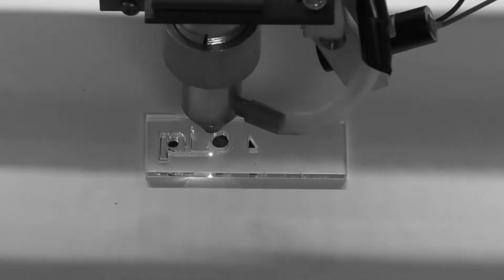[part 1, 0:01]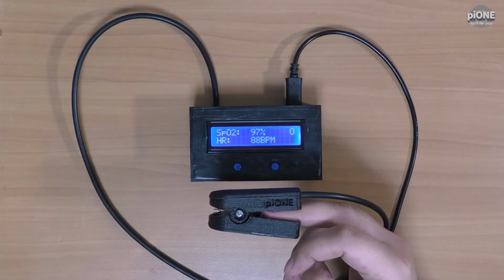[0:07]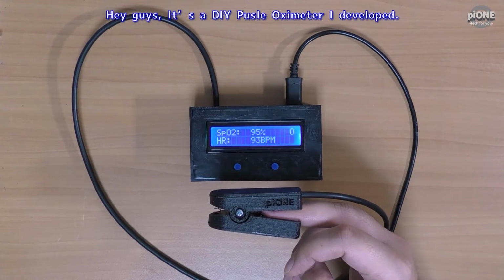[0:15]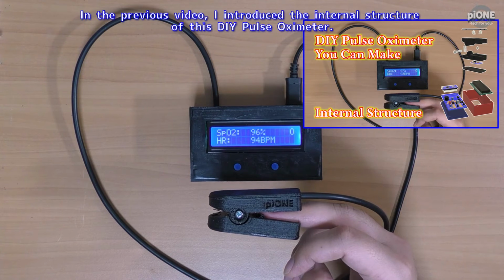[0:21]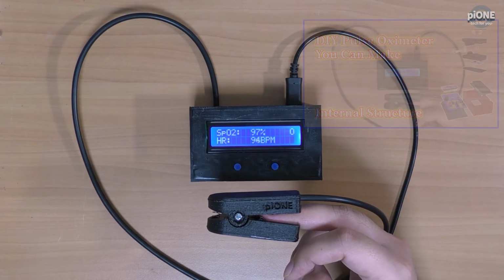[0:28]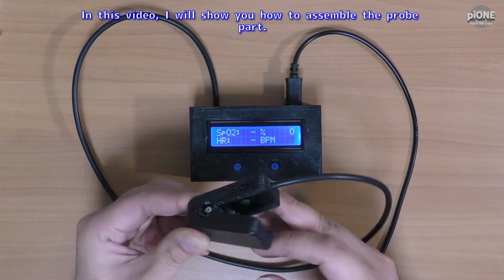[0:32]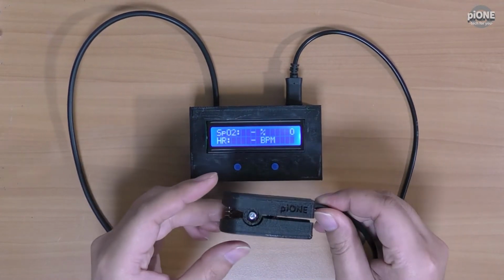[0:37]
In the previous video, I introduced the internal structure of this DIY Pulse Oximeter. In this video, I will show you how to assemble the probe part. Okay, let's get started.
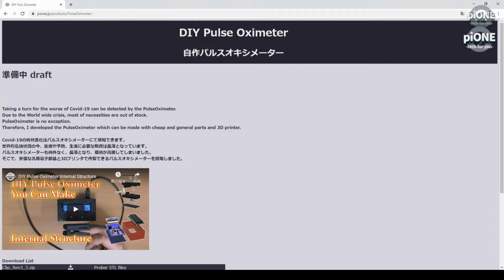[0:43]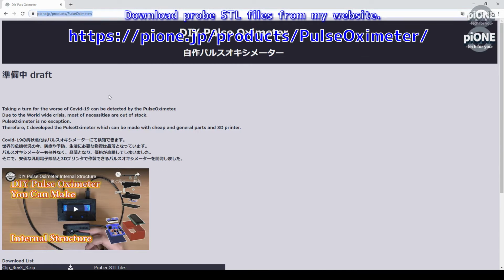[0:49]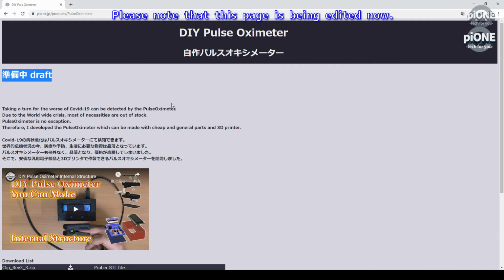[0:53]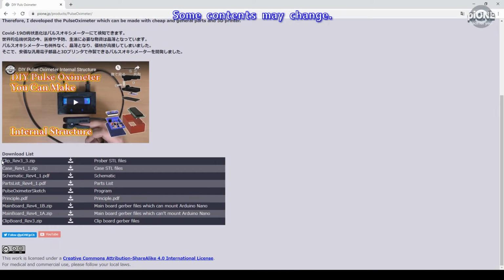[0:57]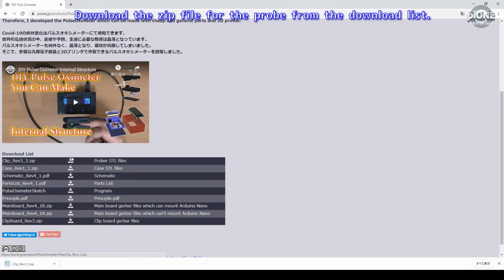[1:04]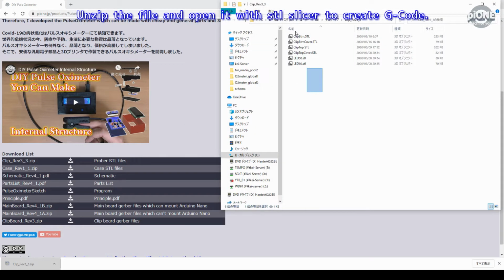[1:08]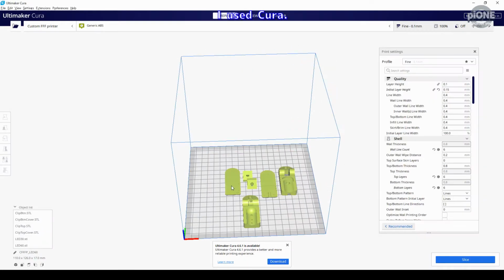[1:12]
First, printing 3D parts. Download probe STL files from my website. Please note that this page is being edited now. Some contents may change. Download the zip file for the probe from the download list. Unzip the file and open it with STL slicer to create G-code. I used Cura.
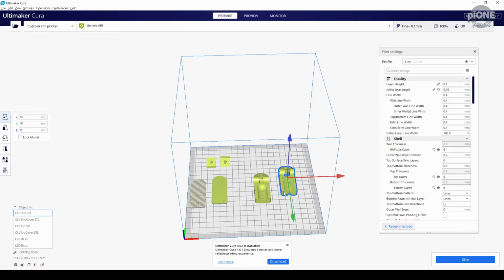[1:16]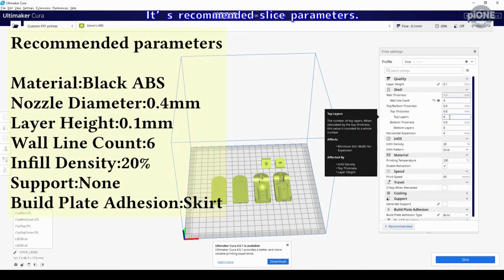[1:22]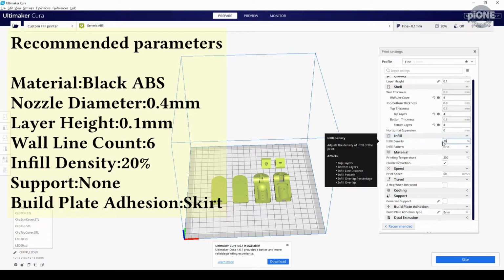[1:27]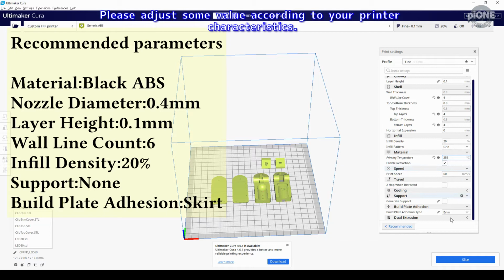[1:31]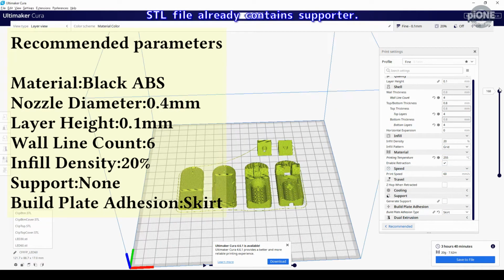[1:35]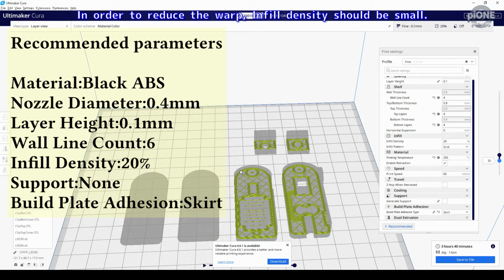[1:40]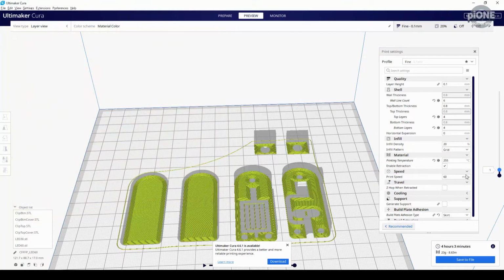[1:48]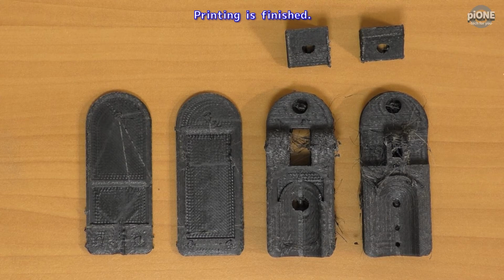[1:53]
These are the recommended slice parameters. Please adjust some values according to your printer characteristics. The STL file already contains supports. In order to reduce warp, infill density should be small. The material should be black ABS to reduce ambient light. Printing is finished.
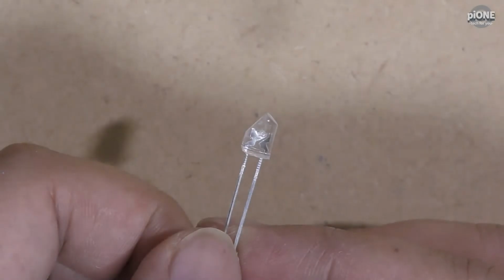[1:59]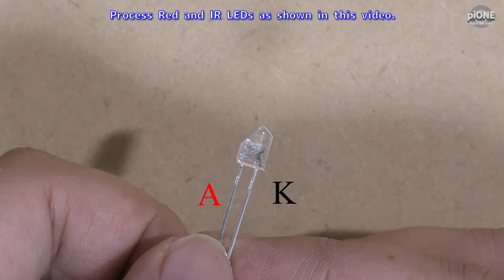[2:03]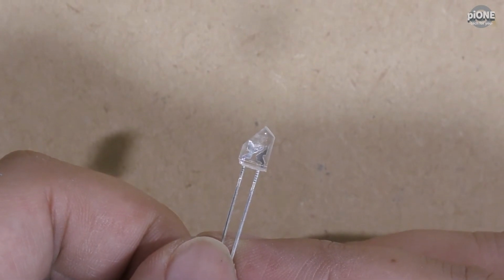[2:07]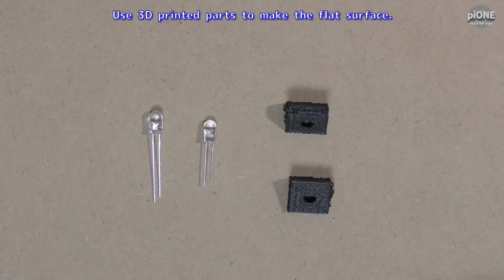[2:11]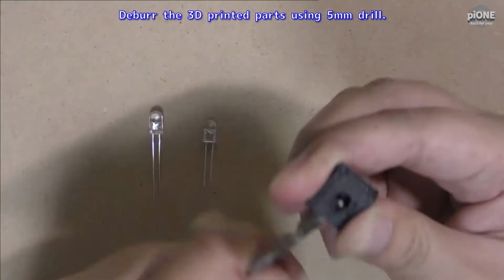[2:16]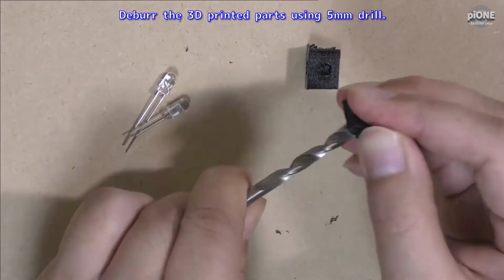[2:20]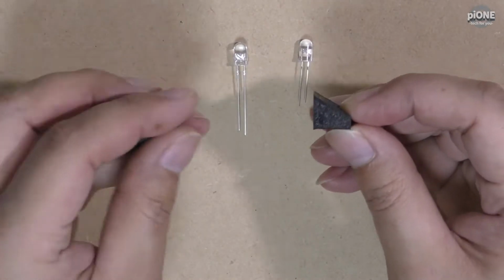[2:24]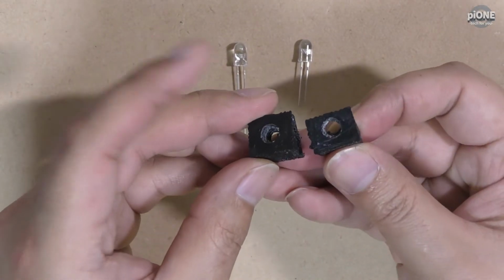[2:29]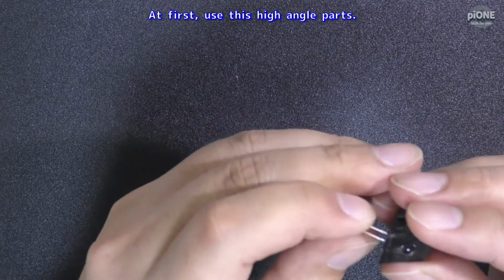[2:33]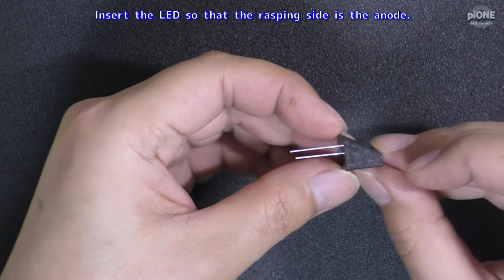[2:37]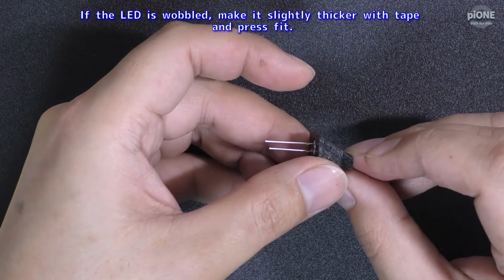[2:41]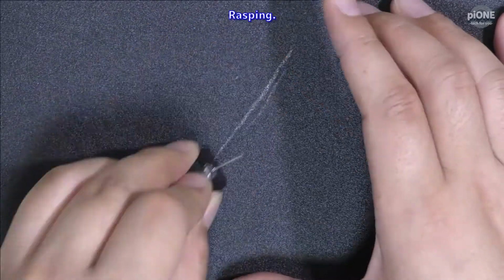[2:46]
Second, rasping LED. Process red and IR LEDs as shown in this video. Use 3D printed parts to make the flat surface. Deburr the 3D printed parts using a 5mm drill. At first, use this high angle part. Insert the LED so that the rasping side is the anode. If the LED wobbles, make it slightly thicker with tape and press fit. Rasping.
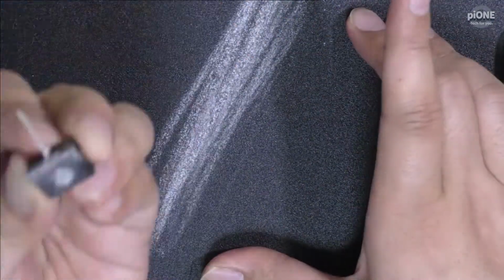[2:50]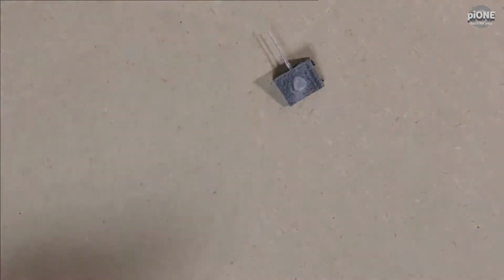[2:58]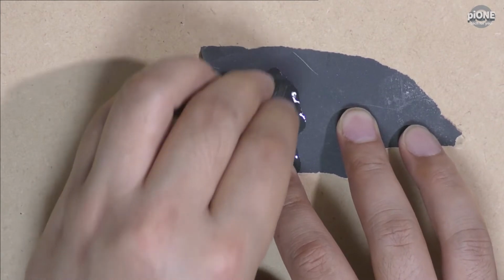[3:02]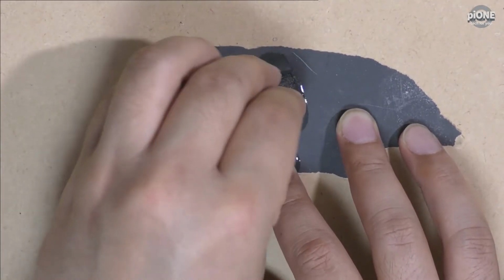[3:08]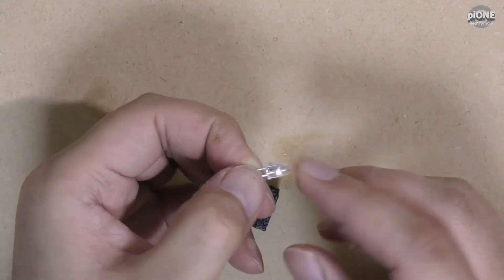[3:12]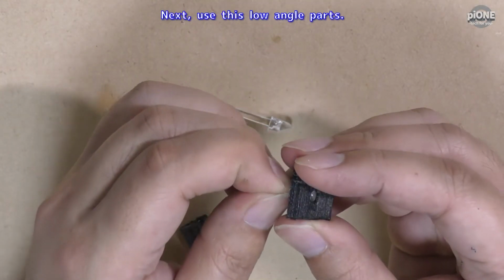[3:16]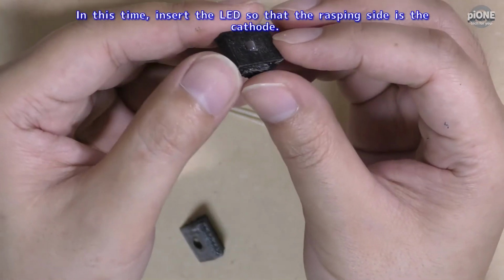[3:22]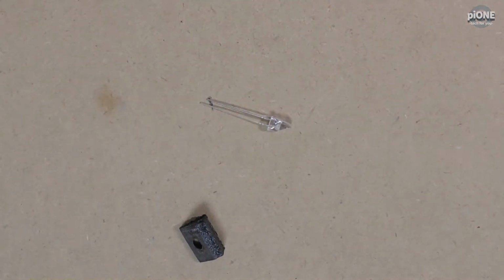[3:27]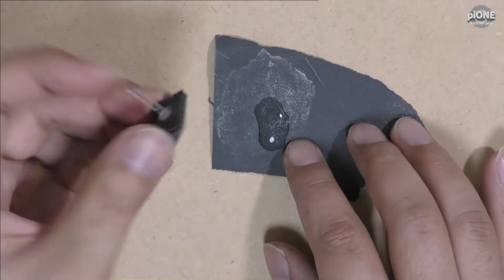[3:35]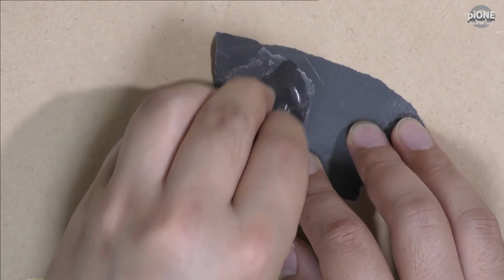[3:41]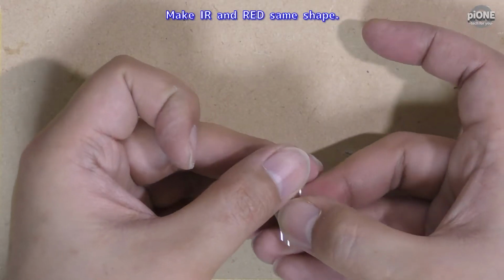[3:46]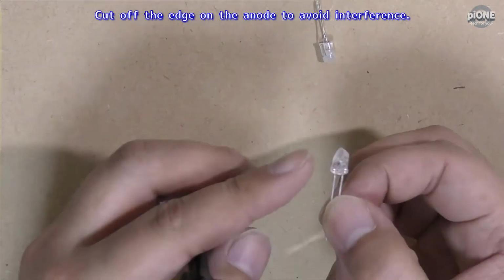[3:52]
Next, use this low angle part. And this time, insert the LED so that the rasping side is the cathode. Rasping. Make IR and red the same shape. Cut off the edge on the anode to avoid interference. That's all.
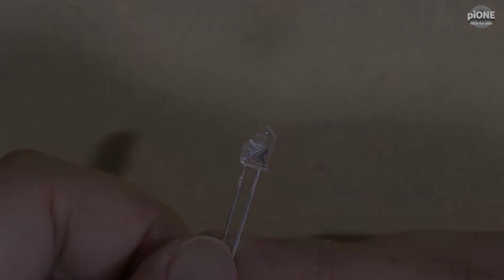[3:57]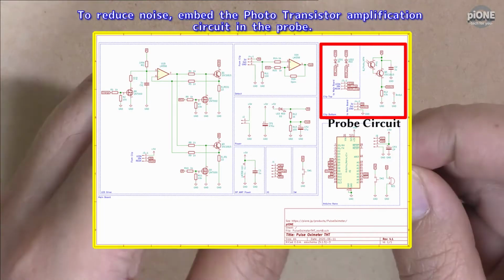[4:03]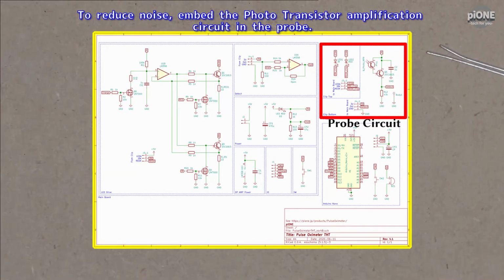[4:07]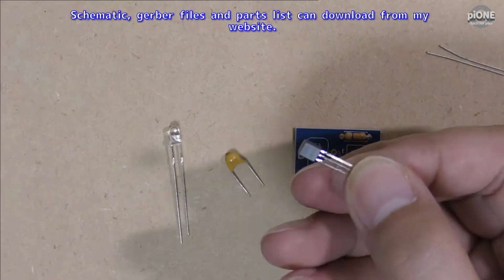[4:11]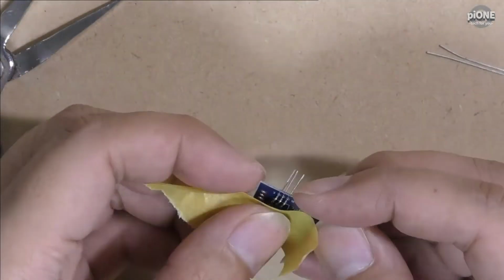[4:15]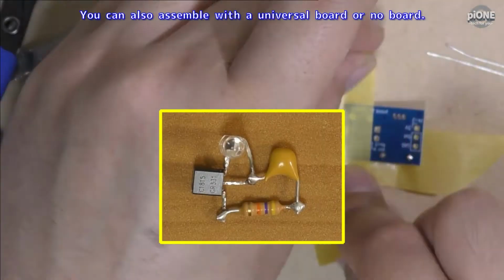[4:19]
Third, assembling the phototransistor circuit. To reduce noise, embed the phototransistor amplification circuit in the probe. Schematic, Gerber files and parts list can be downloaded from my website. You can also assemble with a universal board or no board.
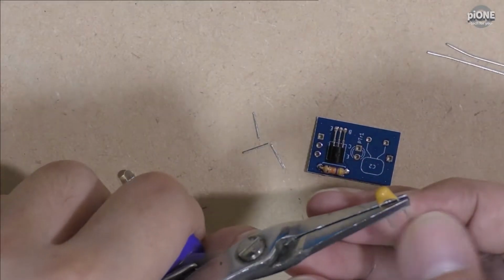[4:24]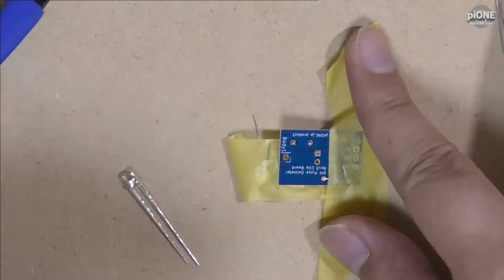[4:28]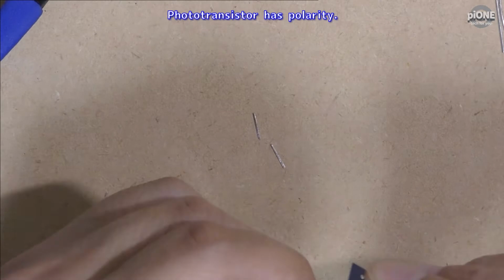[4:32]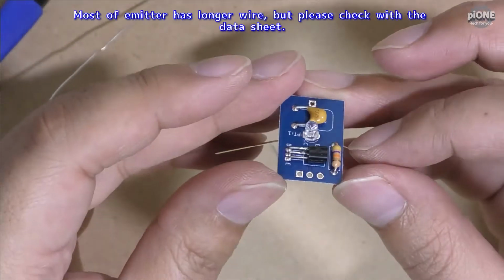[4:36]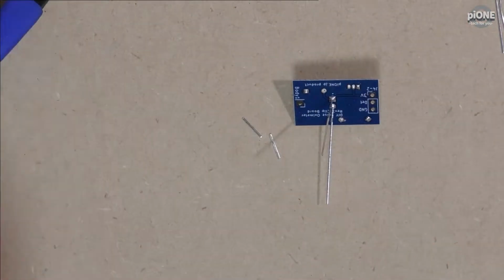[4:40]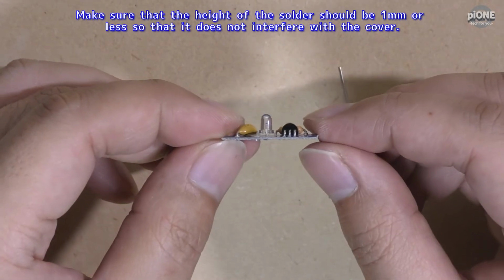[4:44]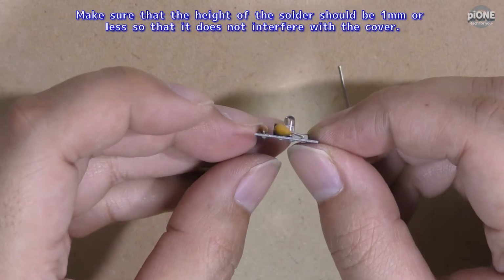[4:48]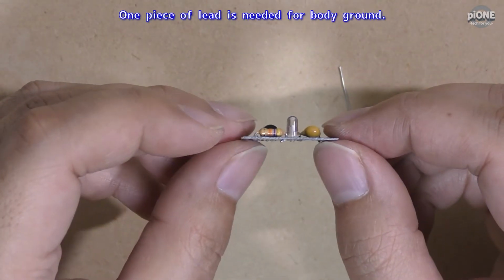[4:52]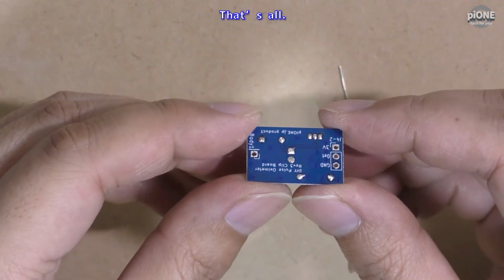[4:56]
The phototransistor has polarity. On most, the emitter has the longer wire, but please check with the data sheet. Make sure that the height of the solder is 1mm or less so that it does not interfere with the cover. One piece of lead is needed for body ground. That's all.
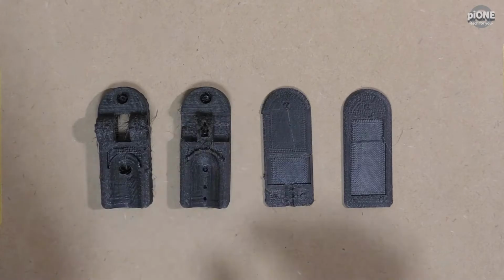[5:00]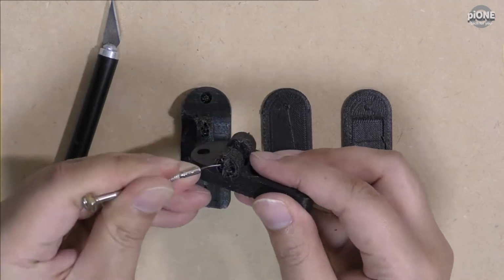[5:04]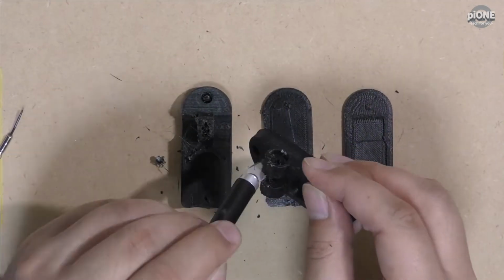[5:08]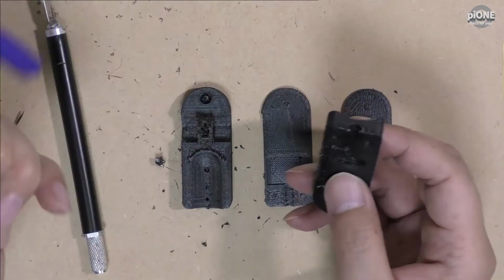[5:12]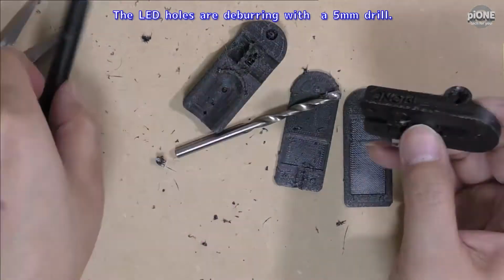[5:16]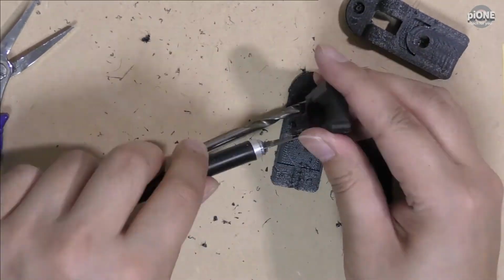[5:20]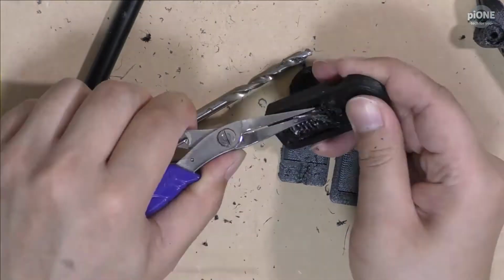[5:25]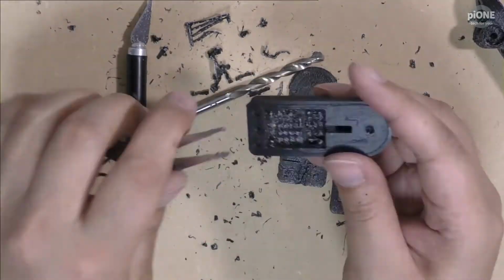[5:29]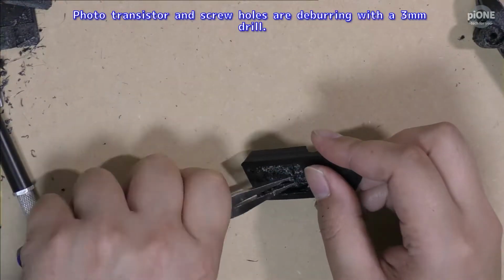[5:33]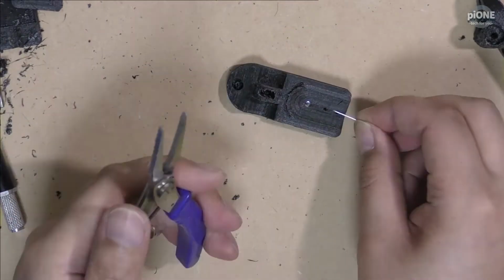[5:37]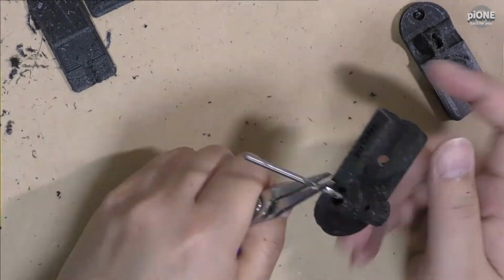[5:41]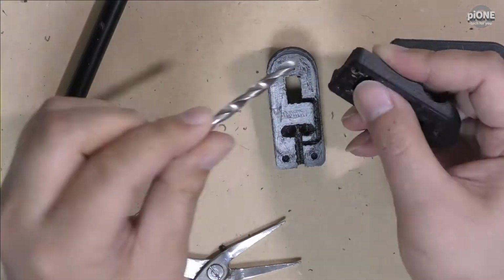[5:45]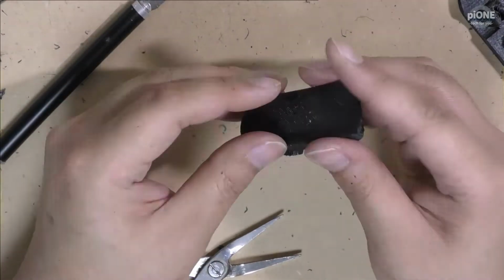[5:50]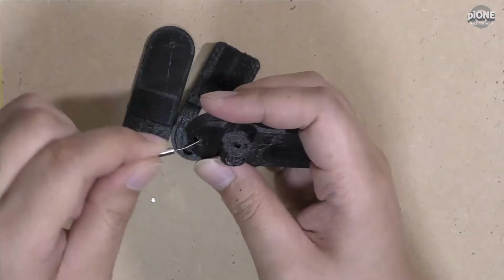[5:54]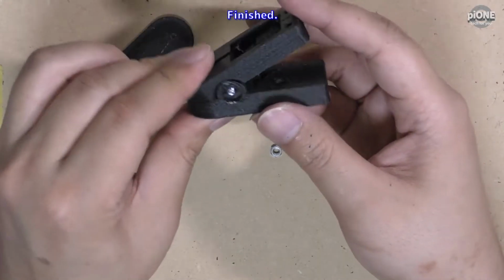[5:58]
Fourth, removing deburr and support. The LED holes are deburred with a 5mm drill. Phototransistors and screw holes are deburred with a 3mm drill. Finished.
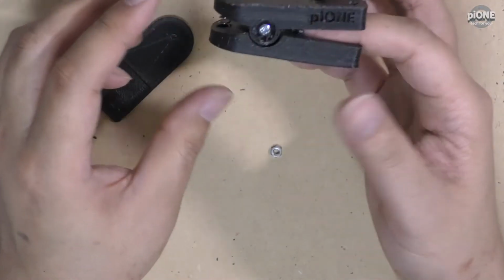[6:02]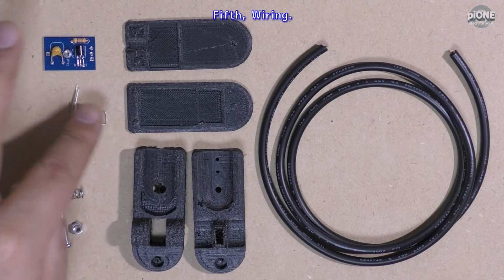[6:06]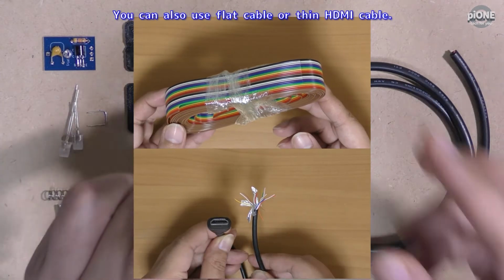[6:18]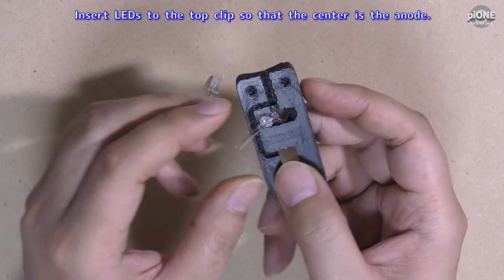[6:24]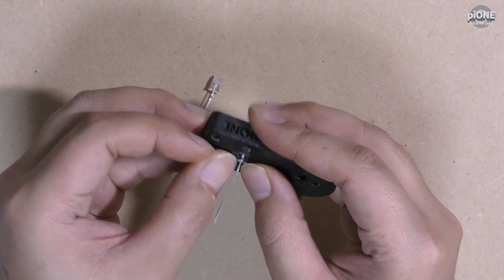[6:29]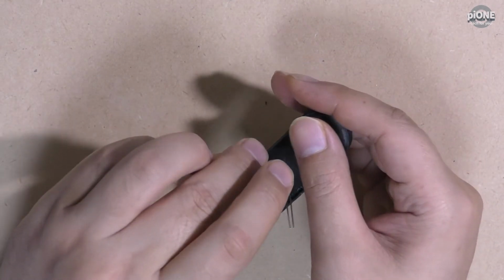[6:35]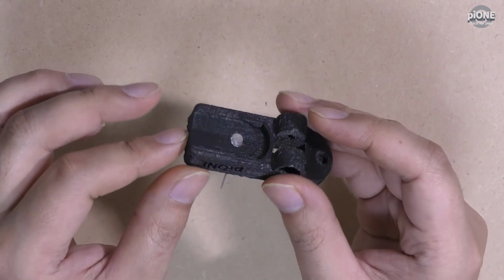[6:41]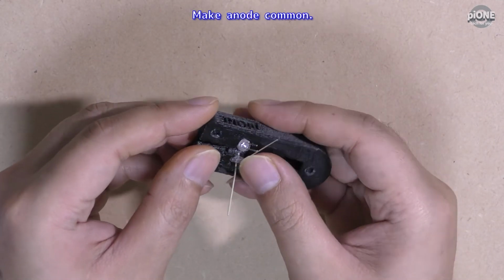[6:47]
Fifth, wiring. The preparation is over. Wire all components. I use 28AWG 6 core wire. You can also use flat cable or thin HDMI cable. Insert LEDs to the top clip so that the center is the anode. Wire to LEDs. Make anode common.
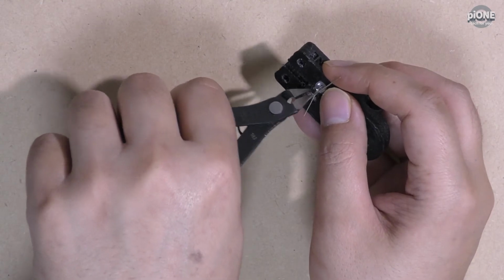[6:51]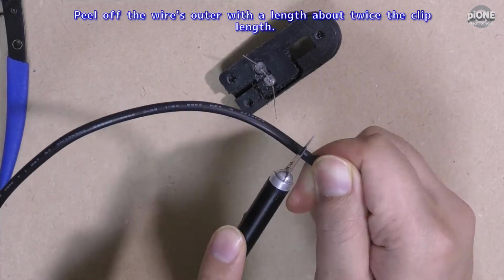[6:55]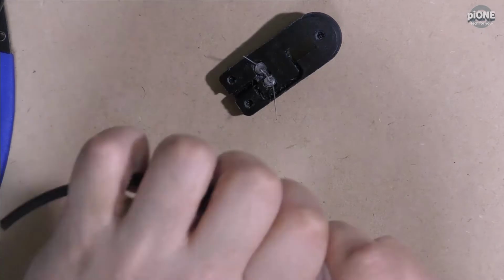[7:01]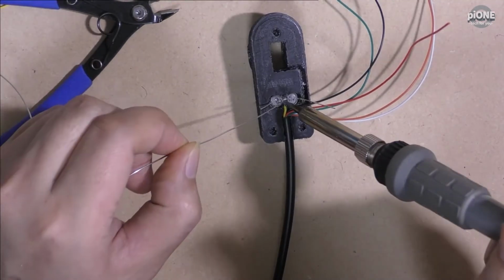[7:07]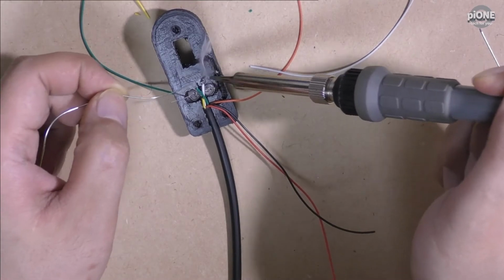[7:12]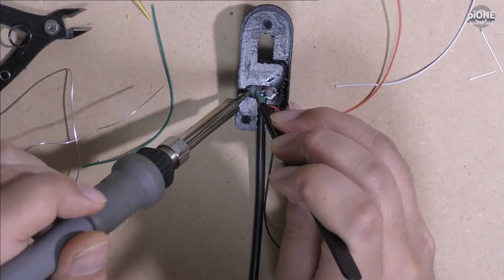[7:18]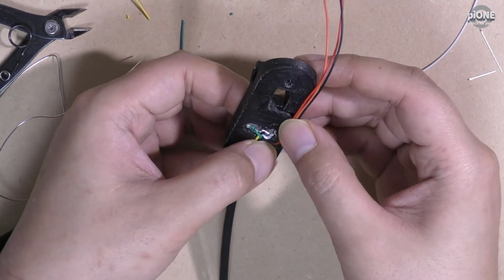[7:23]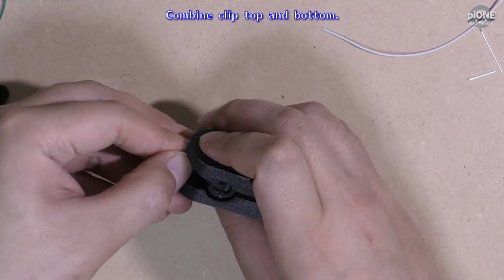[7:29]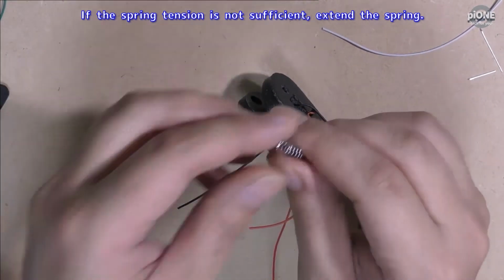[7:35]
Peel off the wire's outer sheath with a length about twice the clip length. Solder to LEDs. Insert the three backside wires into the groove. Combine clip top and bottom. If the spring tension is not sufficient, extend the spring.
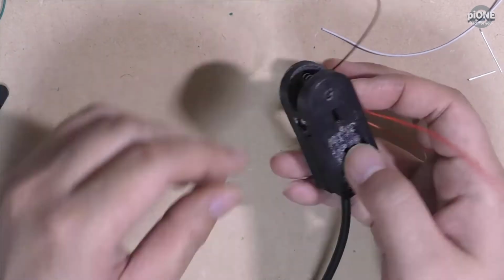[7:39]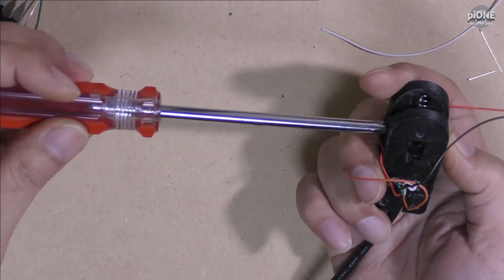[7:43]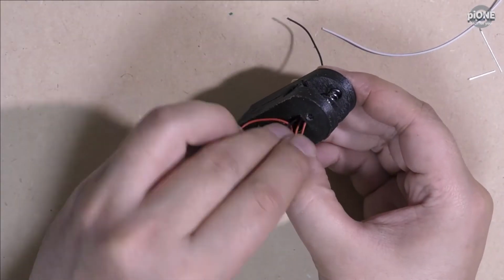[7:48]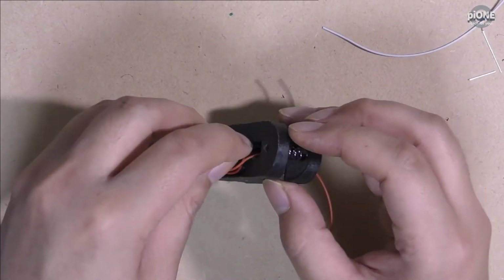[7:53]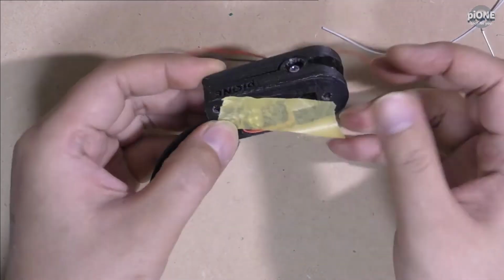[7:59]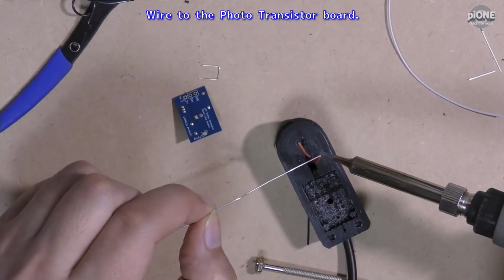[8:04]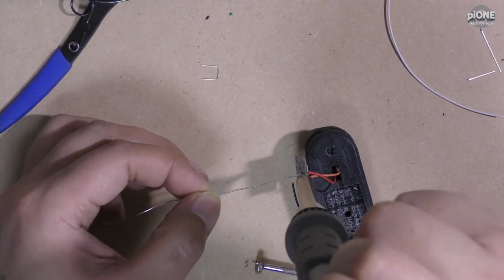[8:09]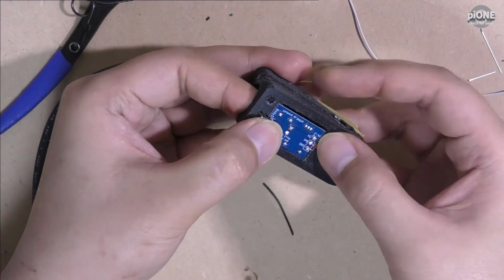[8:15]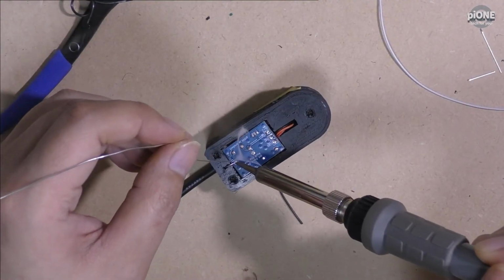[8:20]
Thread three wires on the backside. Wire to the phototransistor board. Solder the body ground lead. Wiring is finished.
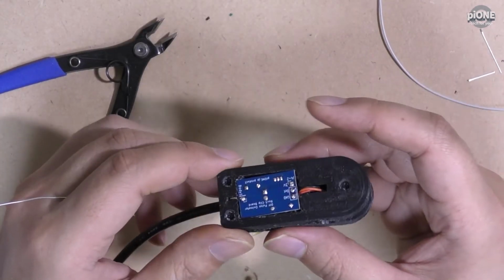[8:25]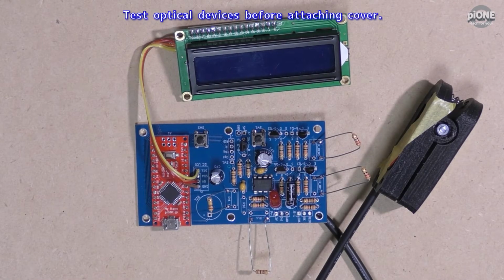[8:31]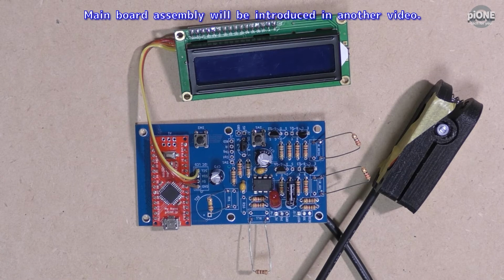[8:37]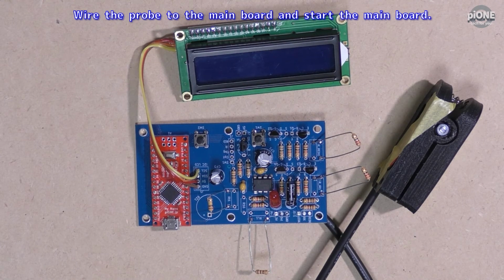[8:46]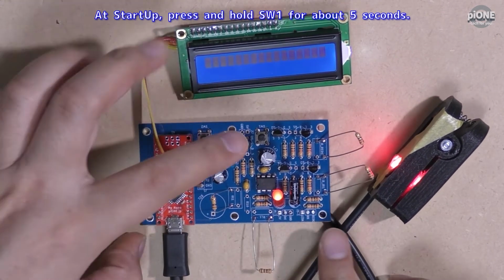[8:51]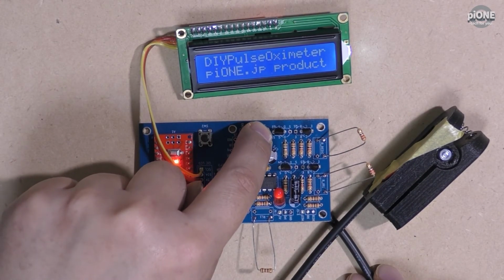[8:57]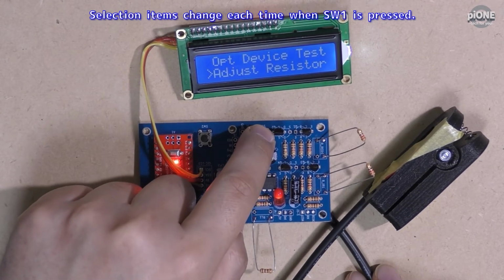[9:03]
Sixth, testing optical devices. Test optical devices before attaching the cover. Main board assembly will be introduced in another video. The pulse oximeter program has already been written in Arduino. Wire the probe to the main board and start the main board. At startup, press and hold SW1 for about 5 seconds. Selection items change each time SW1 is pressed.
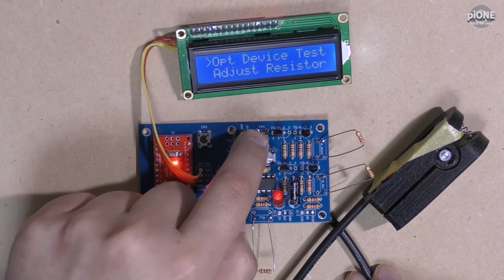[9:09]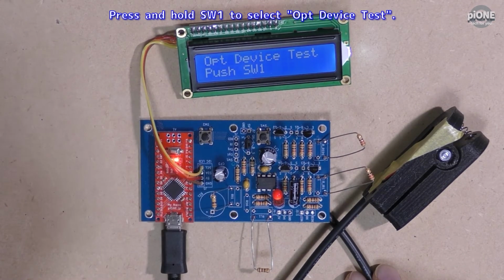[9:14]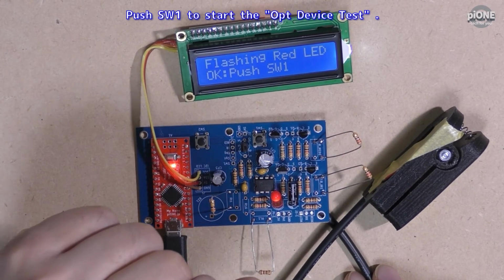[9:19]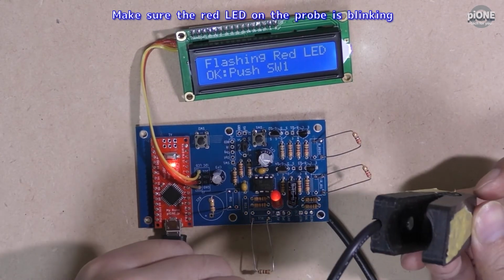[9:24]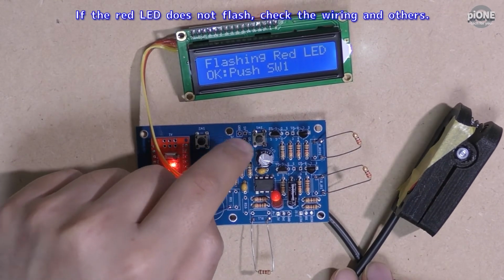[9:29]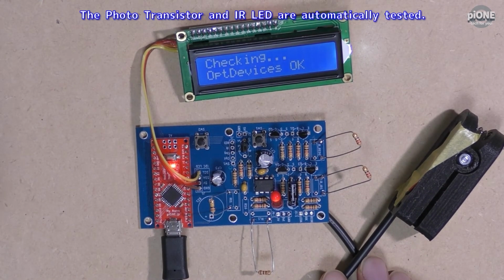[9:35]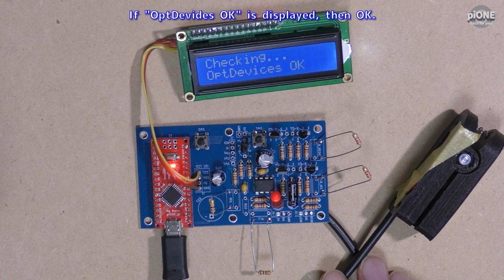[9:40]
Press and hold SW1 to select Opt Device Test. Push SW1 to start the Opt Device Test. Make sure the red LED on the probe is flashing. If the red LED does not flash, check the wiring and others. Push SW1. The phototransistor and IR LED are automatically tested. If Opt Devices OK is displayed, then OK. Else if an error is displayed, check the wiring and others.
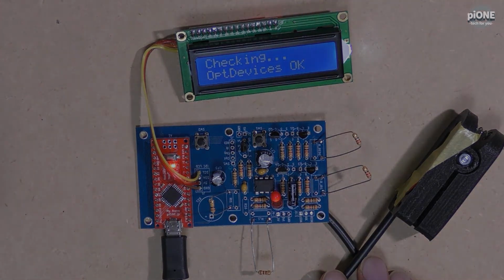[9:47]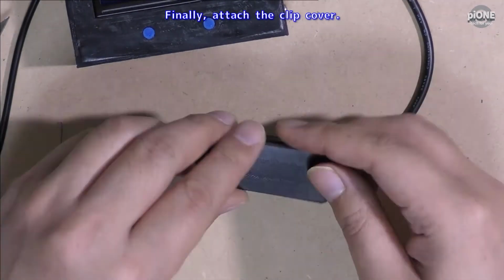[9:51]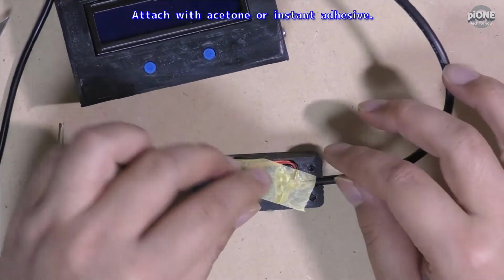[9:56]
Finally, attach the clip cover. Attach with acetone or instant adhesive.
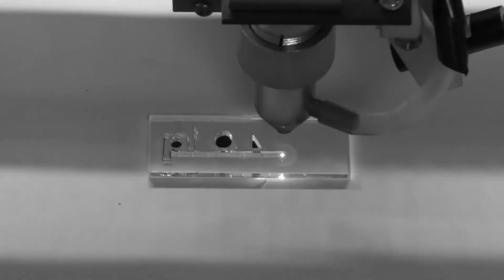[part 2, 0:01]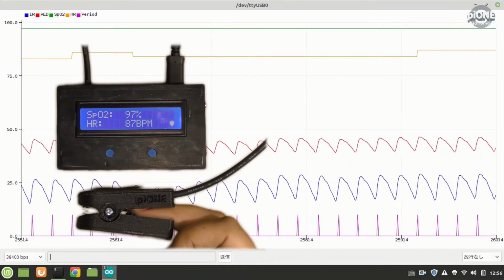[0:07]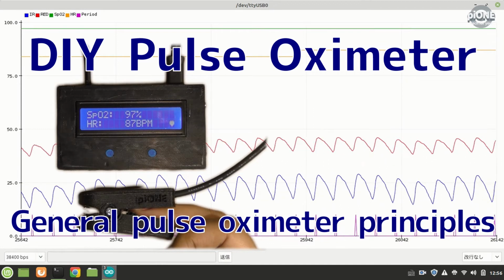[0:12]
DIY Pulse Oximeter. General Pulse Oximeter Principles.
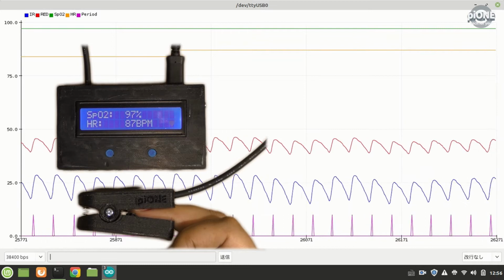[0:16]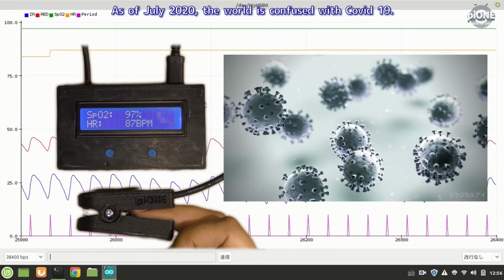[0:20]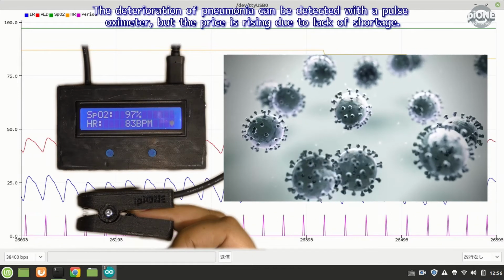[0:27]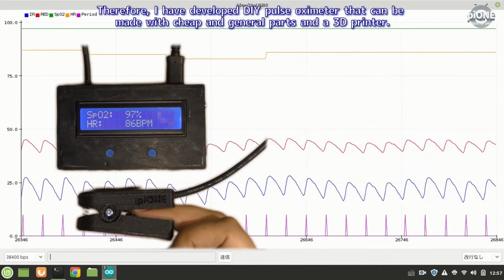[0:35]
As of July 2020, the world is confused with COVID-19. The deterioration of pneumonia can be detected with a pulse oximeter, but the price is rising due to shortage. Therefore, I have developed a DIY pulse oximeter that can be made with cheap and general parts and a 3D printer.
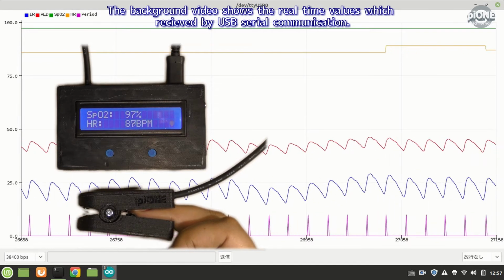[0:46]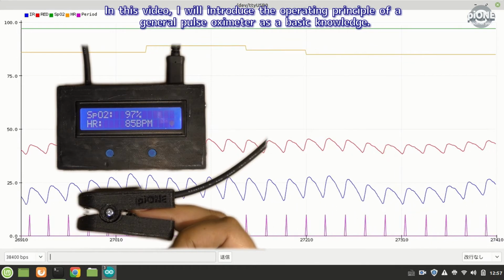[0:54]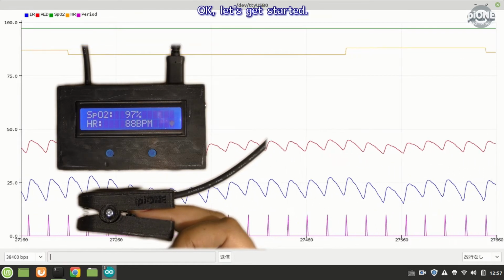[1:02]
The background video shows the real-time values which are received by USB serial communication. In this video, I will introduce the operating principle of a general pulse oximeter as basic knowledge. Okay, let's get started.
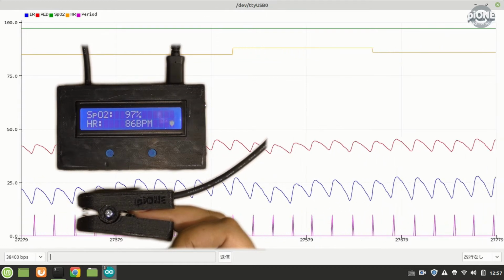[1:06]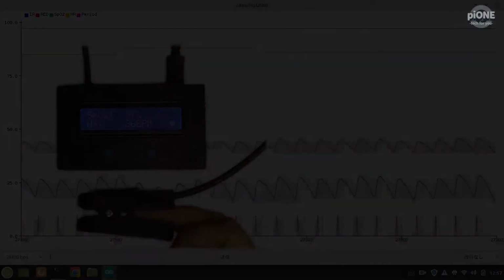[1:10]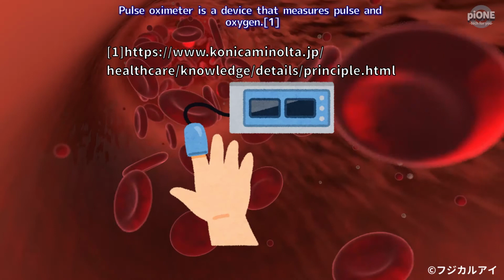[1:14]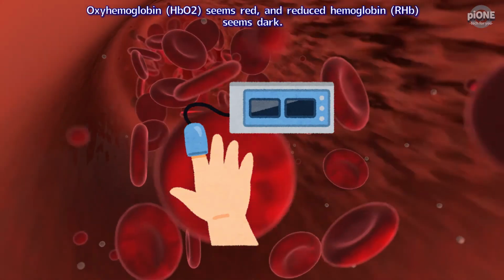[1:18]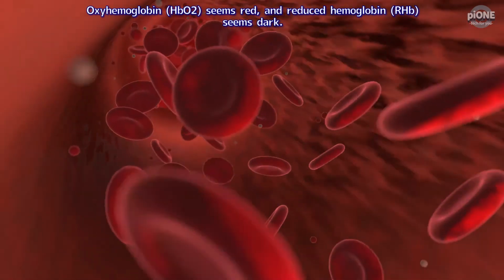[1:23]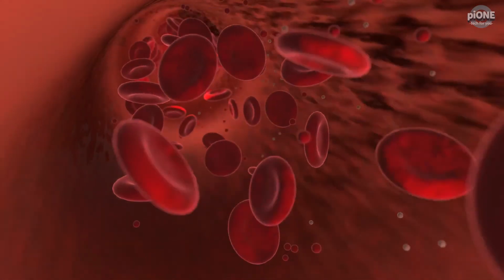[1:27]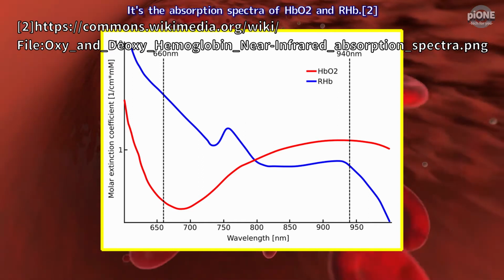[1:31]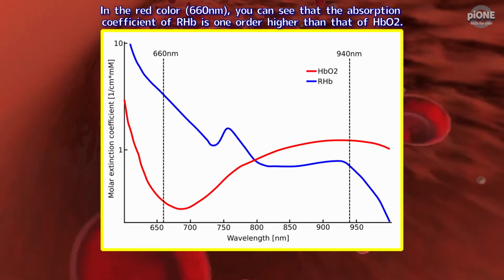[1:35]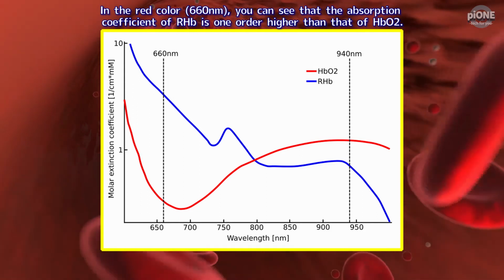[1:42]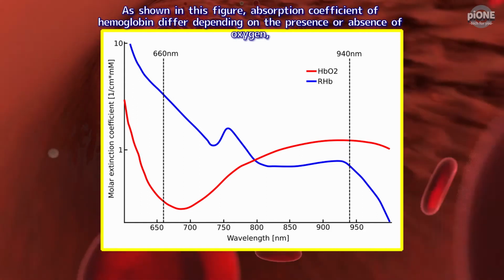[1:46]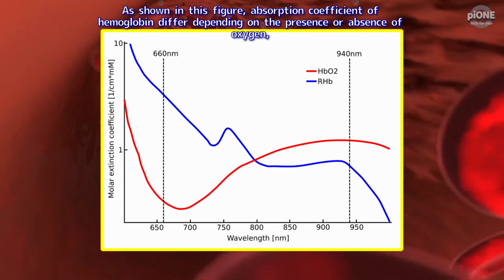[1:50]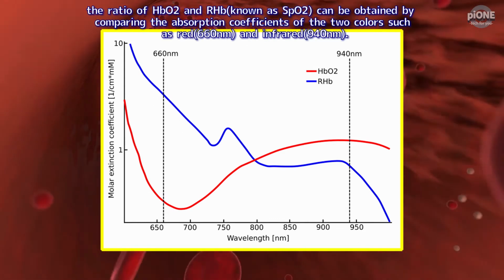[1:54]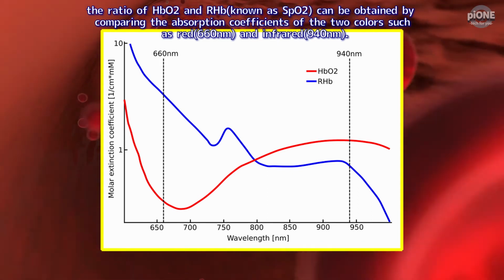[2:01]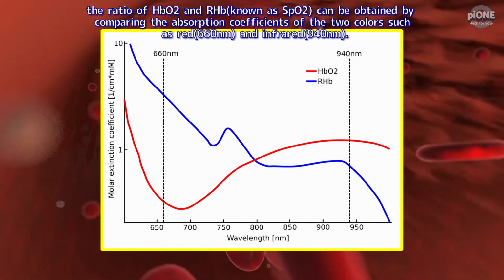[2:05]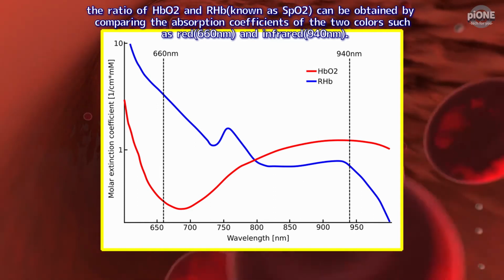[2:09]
A pulse oximeter is a device that measures pulse and oxygen. Oxyhemoglobin, HbO2, seems red, and reduced hemoglobin, RHb, seems dark. This is the absorption spectra of HbO2 and RHb. In the red color, 660 nanometers, you can see that the absorption coefficient of RHb is one order higher than that of HbO2. As shown in this figure, the absorption coefficient of hemoglobin differs depending on the presence or absence of oxygen. The ratio of HbO2 and RHb, known as SpO2, can be obtained by comparing the absorption coefficients of the two colors, such as red 660 nanometers and infrared 940 nanometers.
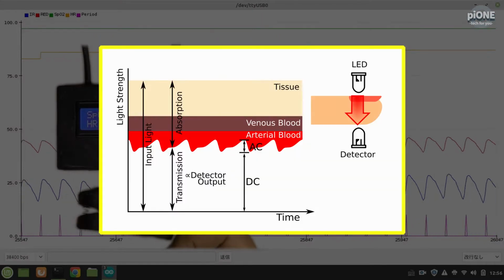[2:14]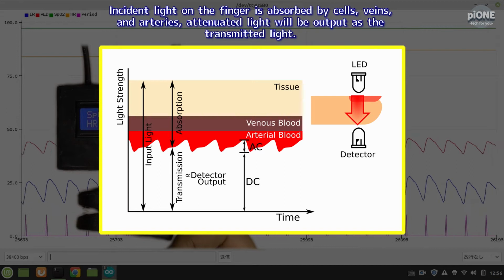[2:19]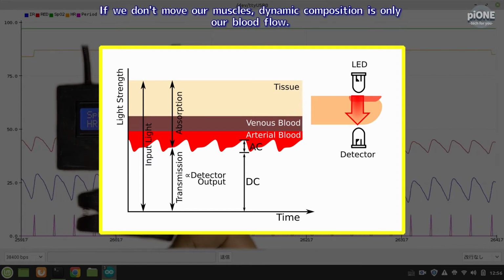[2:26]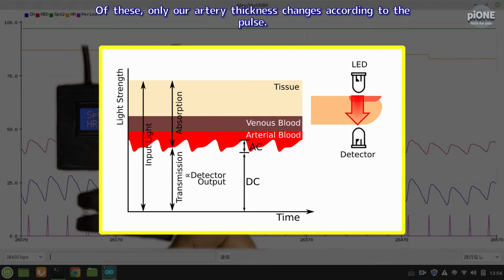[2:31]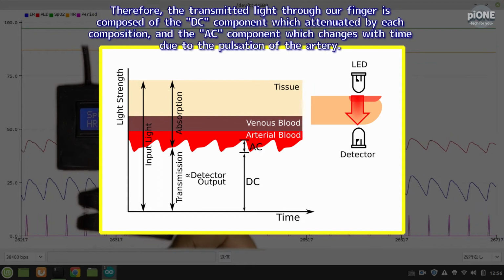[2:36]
Incident light on the finger is absorbed by cells, veins, and arteries. Attenuated light will be output as the transmitted light. If we don't move our muscles, the dynamic composition is only our blood flow. Of these, only our artery thickness changes according to the pulse. Therefore, the transmitted light through our finger is composed of the DC component, which is attenuated by each composition, and the AC component, which changes with time due to the pulsation of the artery.
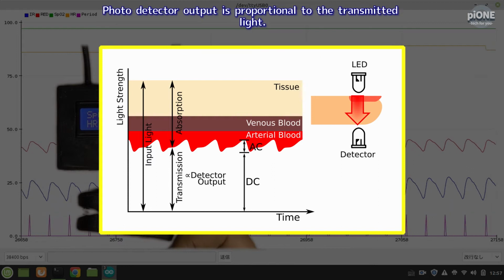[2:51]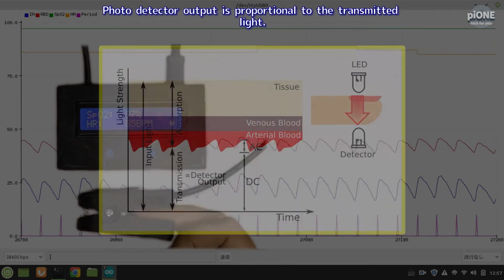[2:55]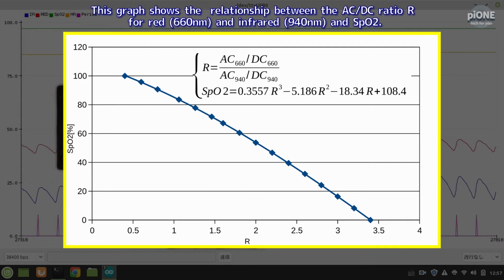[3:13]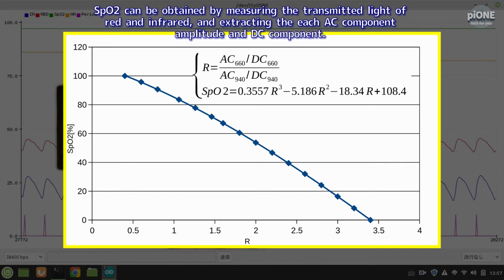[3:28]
Photodetector output is proportional to the transmitted light. The AC-DC ratio R for red, 660 nanometers, and infrared, 940 nanometers, shown in the following equation, is correlated with SpO2. This graph shows the relationship between the AC-DC ratio R for red, 660 nanometers, and infrared, 940 nanometers, and SpO2. SpO2 can be obtained by measuring the transmitted light of red and infrared, and extracting each AC component amplitude and DC component.
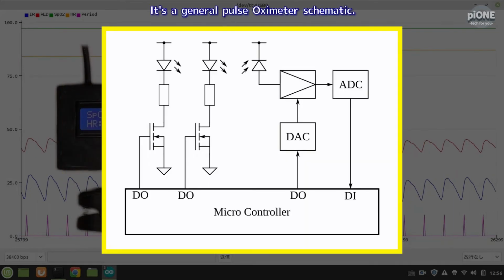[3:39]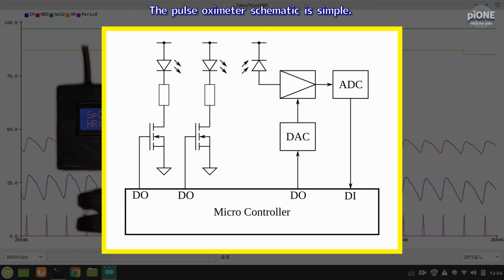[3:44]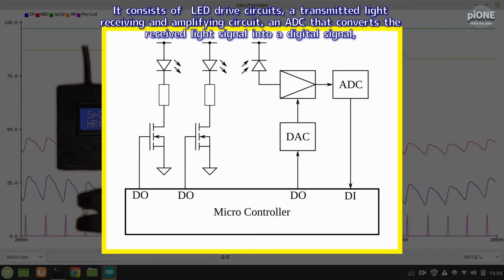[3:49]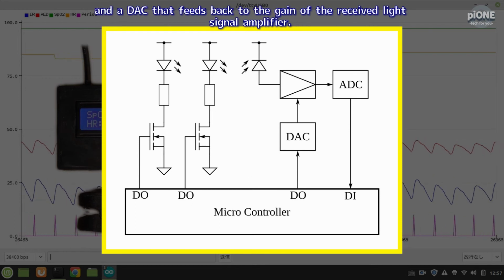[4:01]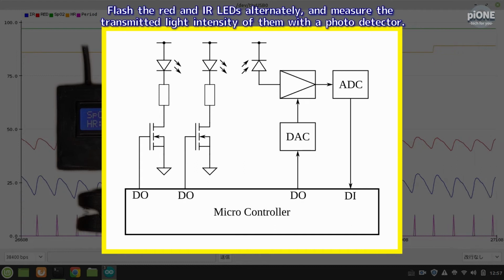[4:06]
This is a general pulse oximeter schematic. The pulse oximeter schematic is simple. It consists of LED drive circuits, a transmitted light receiving and amplifying circuit, an ADC that converts the received light signal into a digital signal, and a DAC that feeds back to the gain of the received light signal amplifier. Flash the red and IR LEDs alternately, and measure the transmitted light intensity of them with a photodetector.
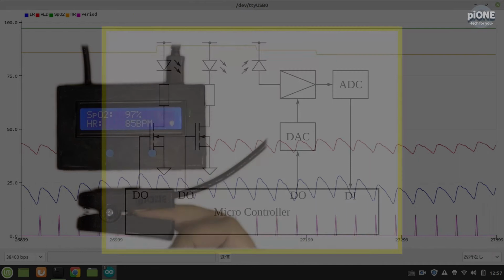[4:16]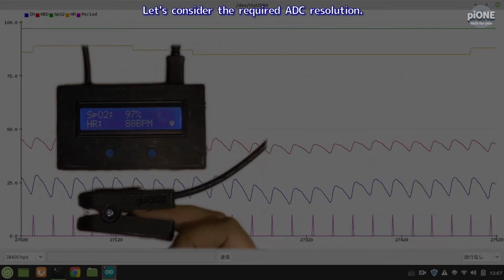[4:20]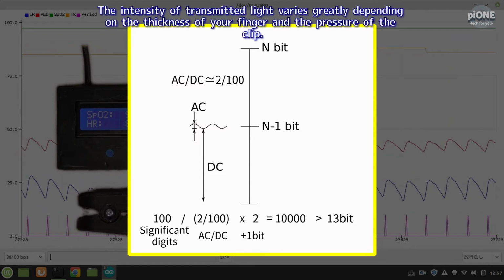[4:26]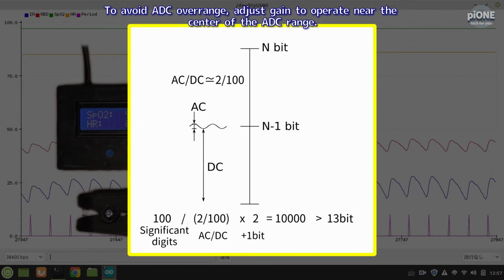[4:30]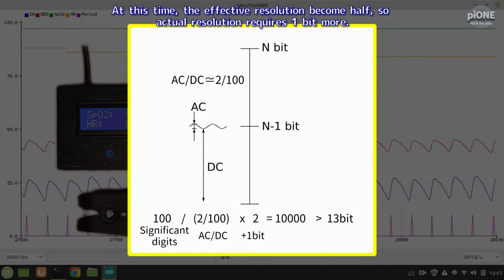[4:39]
Let's consider the required ADC resolution. The intensity of transmitted light varies greatly depending on the thickness of your finger and the pressure of the clip. To avoid ADC overrange, adjust the gain to operate near the center of the ADC range. At this time, the effective resolution becomes half, so the actual resolution requires one bit more.
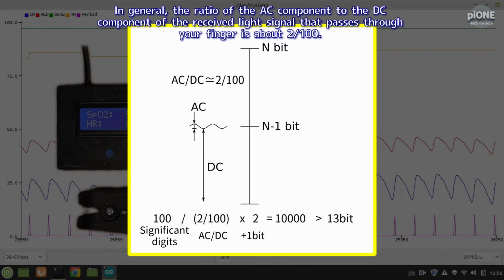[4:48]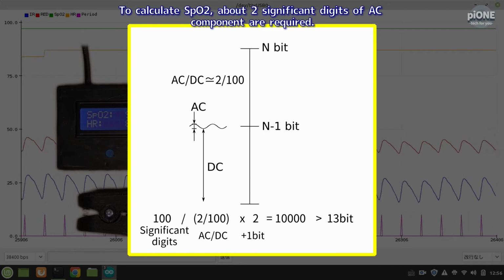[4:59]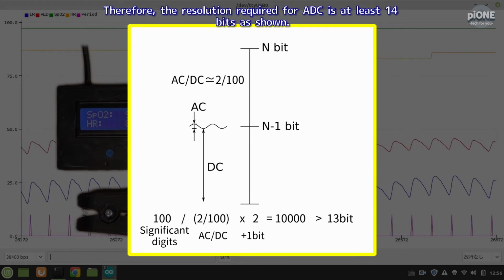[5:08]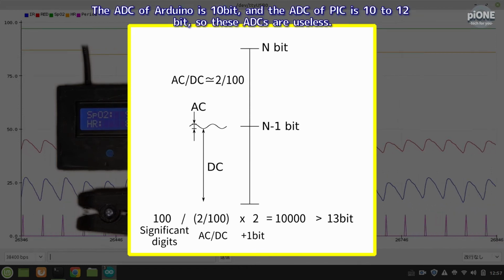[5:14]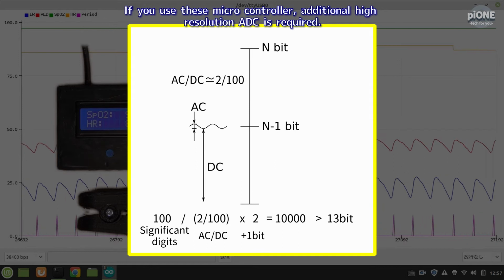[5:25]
In general, the ratio of the AC component to the DC component of the received light signal that passes through your finger is about 2/100. To calculate SpO2, about 2 significant digits of the AC component are required. Therefore, the resolution required for the ADC is at least 14 bits as shown. The ADC of Arduino is 10 bit, and the ADC of PIC is 10 to 12 bit, so these ADCs are useless. If you use these microcontrollers, an additional high resolution ADC is required.
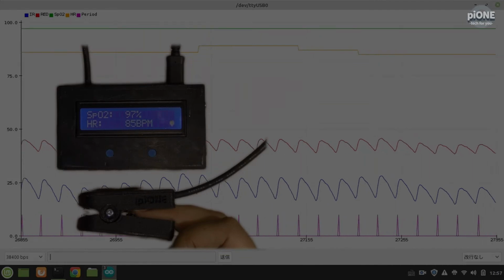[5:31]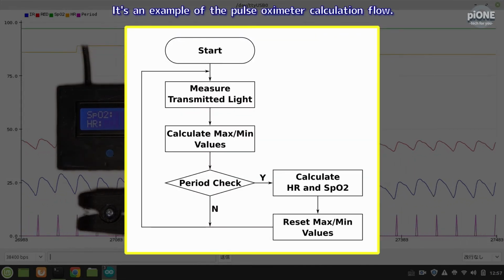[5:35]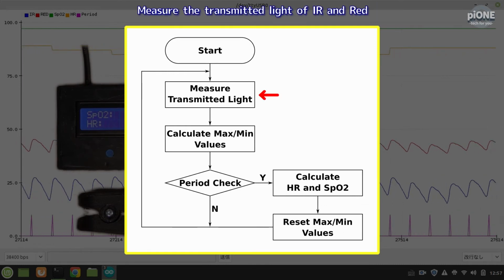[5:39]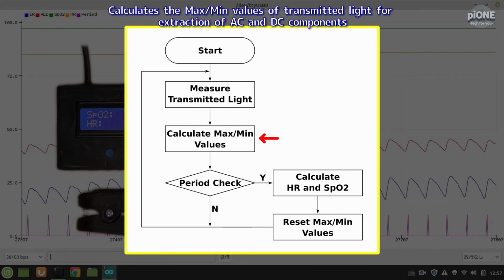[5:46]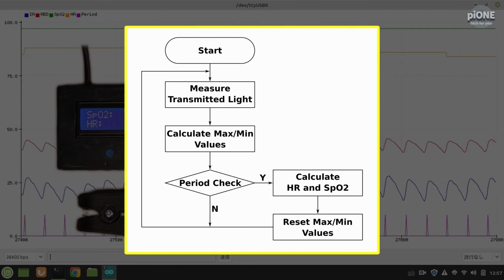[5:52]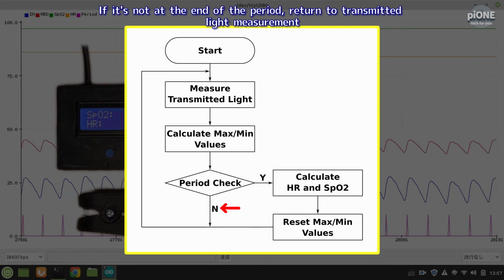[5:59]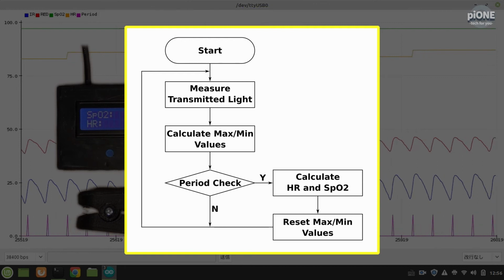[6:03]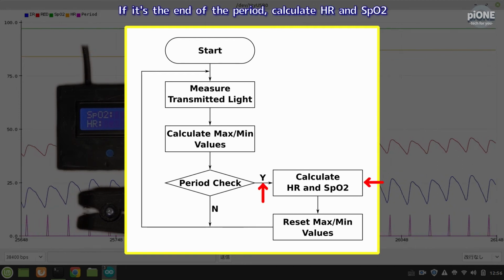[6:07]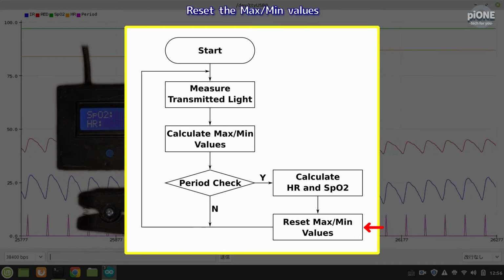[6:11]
This is an example of the pulse oximeter calculation flow. Measure the transmitted light of IR and red. Calculate the max and min values of transmitted light for extraction of AC and DC components. Determine if it is the end of the period. If it's not the end of the period, return to transmitted light measurement. If it's the end of the period, calculate HR and SpO2. Reset the max and min values. Return to transmitted light measurement.
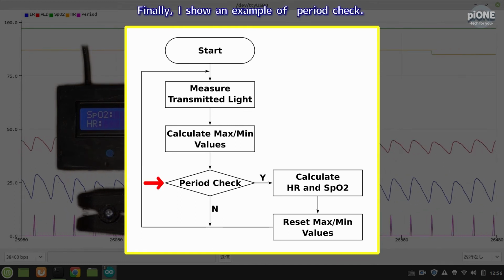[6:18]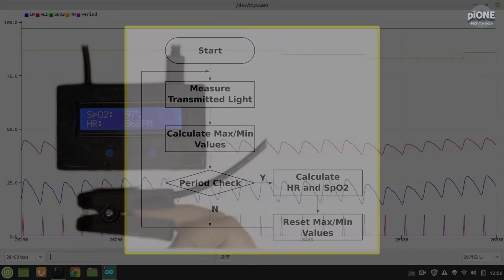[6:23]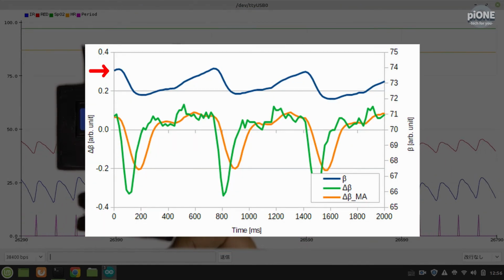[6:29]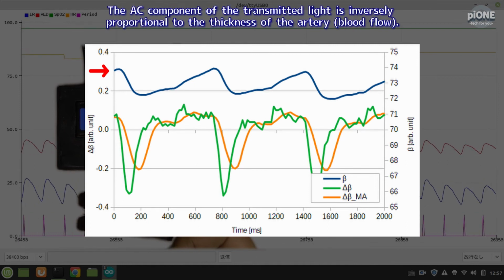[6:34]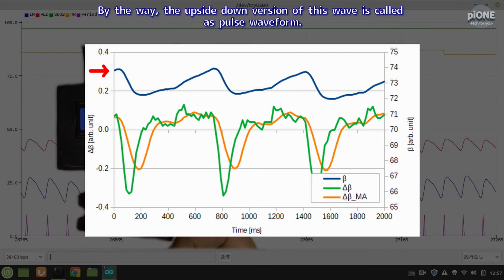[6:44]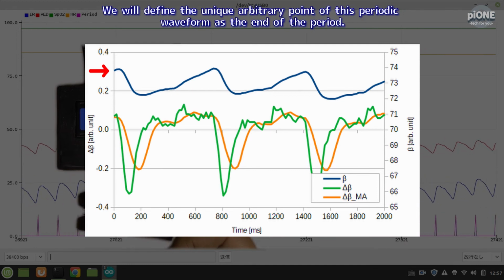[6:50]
Finally, I show an example of period check. This graph is an example of transmitted light. The blue line is an example of transmitted light beta. The AC component of the transmitted light is inversely proportional to the thickness of the artery, blood flow. By the way, the upside-down version of this wave is called the pulse waveform. We will define a unique arbitrary point of this periodic waveform as the end of the period.
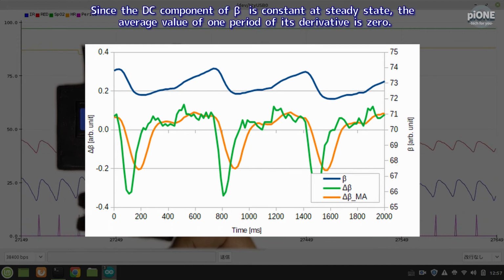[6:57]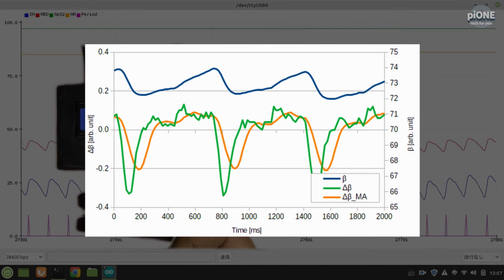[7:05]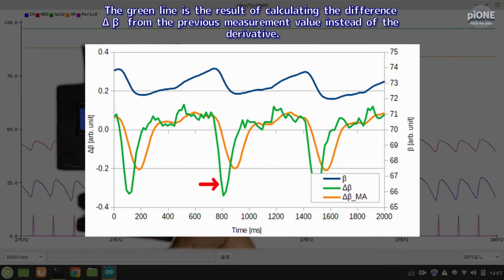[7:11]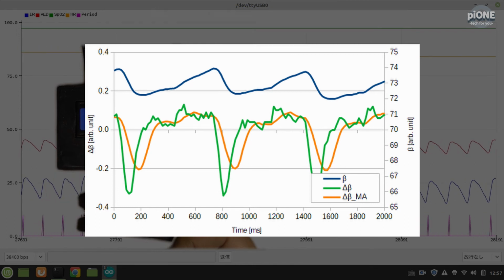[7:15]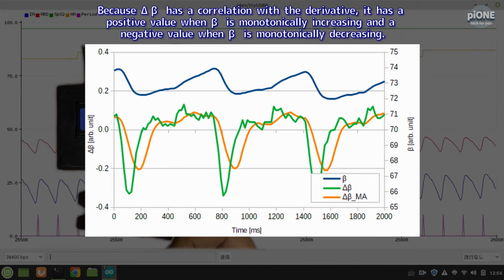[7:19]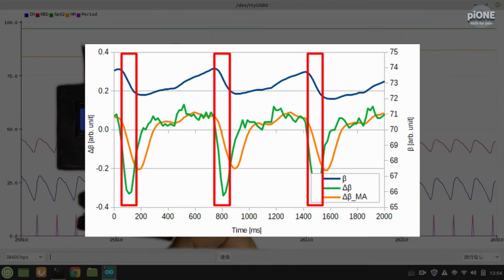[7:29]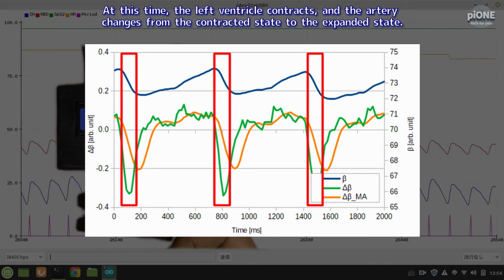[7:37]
Since the DC component of beta is constant at steady state, the average value of one period of its derivative is zero. The green line is the result of calculating the difference delta beta from the previous measurement value instead of the derivative. Because delta beta has a correlation with the derivative, it has a positive value when beta is monotonically increasing and a negative value when beta is monotonically decreasing. Beta has a steep slope when decreasing, and delta beta has a negative peak. At this time, the left ventricle contracts, and the artery changes from the contracted state to the expanded state.
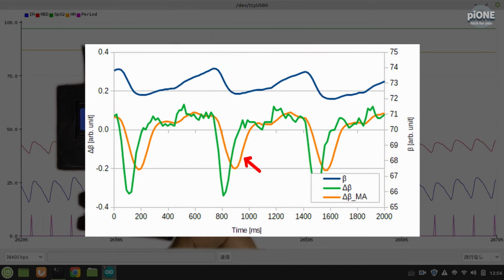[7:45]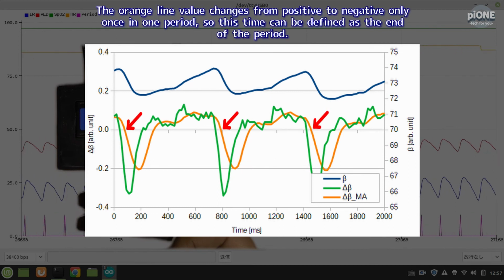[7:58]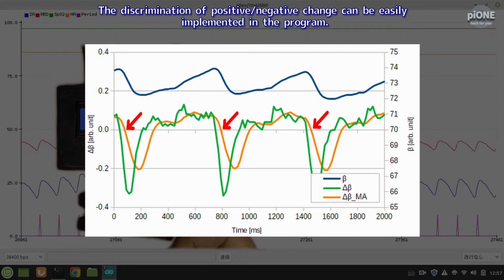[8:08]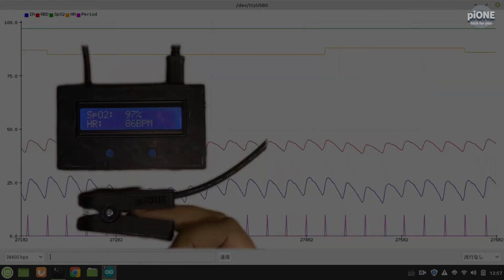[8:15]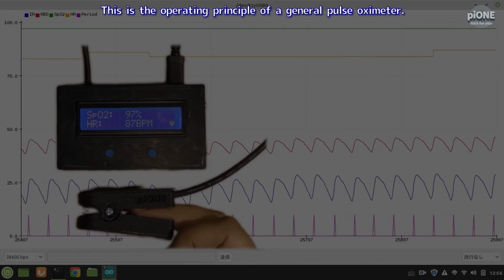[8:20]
The orange line is the result of calculating the moving average from the past 8 points of delta beta to reduce noise. The orange line value changes from positive to negative only once in one period, so this time can be defined as the end of the period. The discrimination of positive/negative change can be easily implemented in the program. This is the operating principle of a general pulse oximeter.
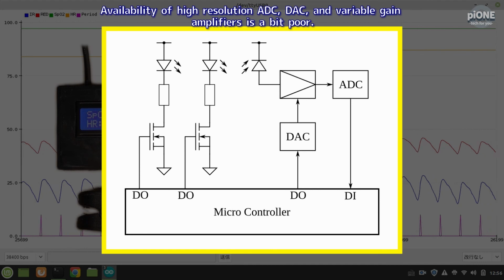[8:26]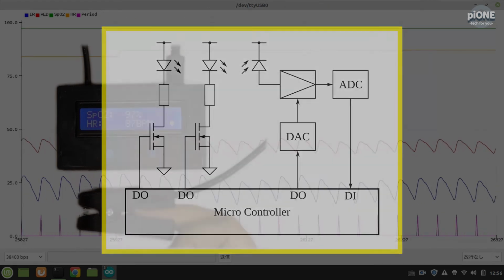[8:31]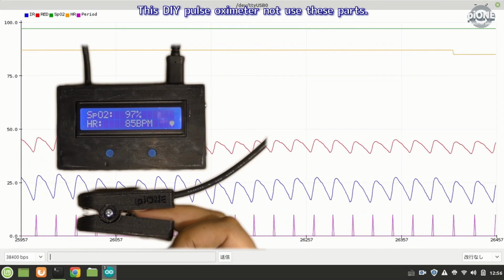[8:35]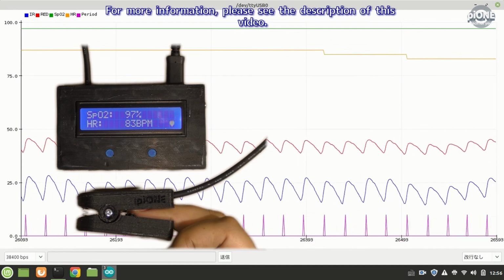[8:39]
Availability of high resolution ADC, DAC, and variable gain amplifiers is a bit poor. This DIY pulse oximeter does not use these parts. For more information, please see the description of this video.
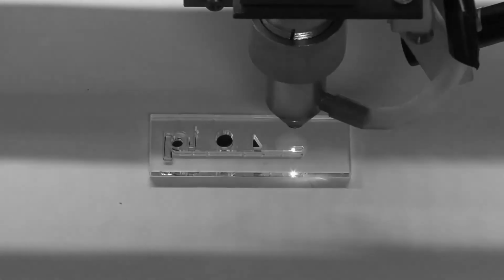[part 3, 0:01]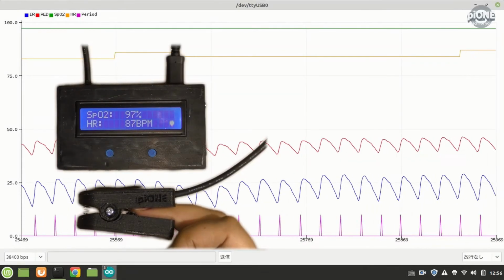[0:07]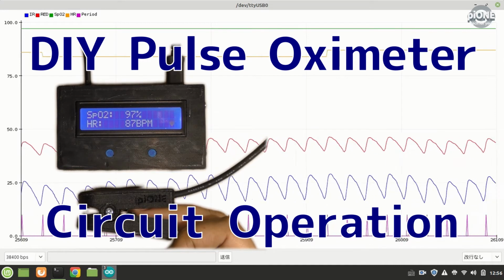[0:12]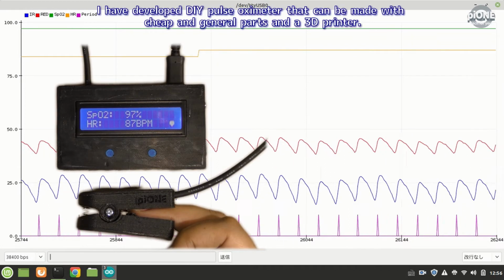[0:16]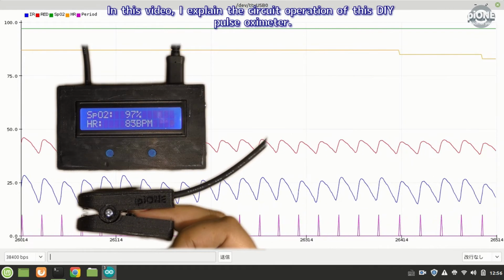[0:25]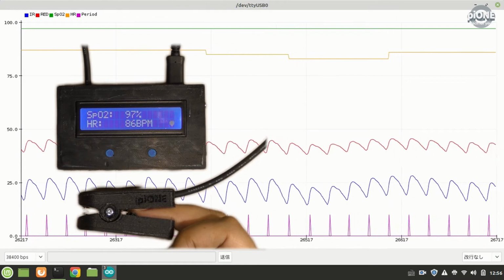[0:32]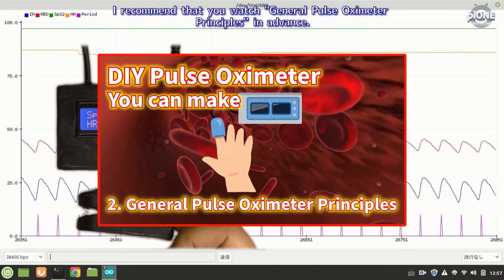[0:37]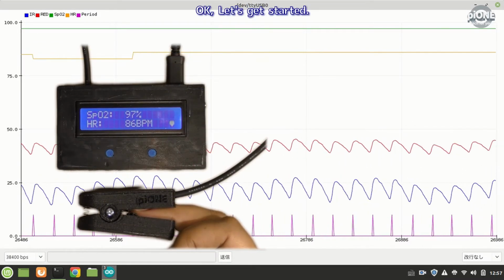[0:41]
DIY pulse oximeter. Circuit operation. I have developed a DIY pulse oximeter that can be made with cheap and general parts and a 3D printer. In this video, I explain the circuit operation of this DIY pulse oximeter. I recommend that you watch general pulse oximeter principles in advance. Okay, let's get started.
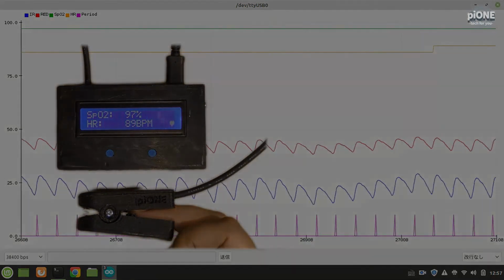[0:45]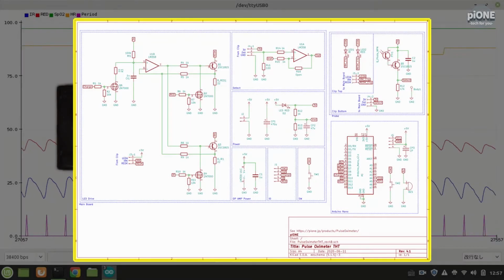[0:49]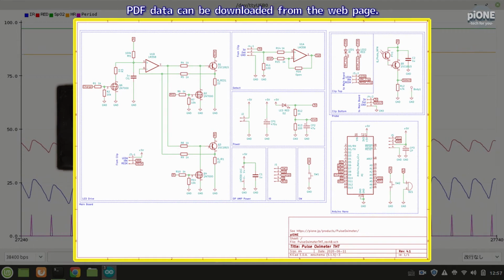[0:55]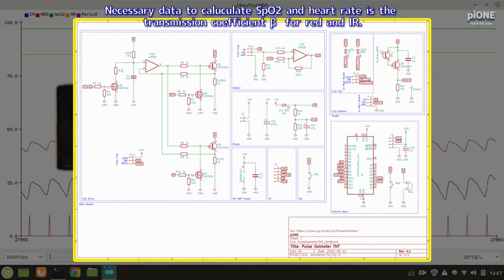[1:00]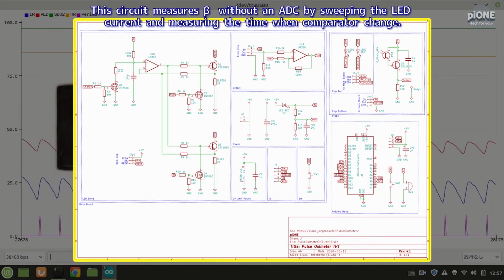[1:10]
It's the DIY pulse oximeter schematic. PDF data can be downloaded from the web page. Necessary data to calculate SpO2 and heart rate is the transmission coefficient beta for red and IR. This circuit measures beta without an ADC by sweeping the LED current and measuring the time when the comparator changes.
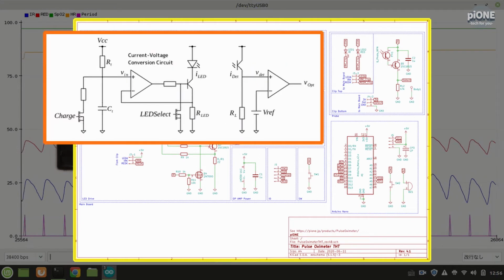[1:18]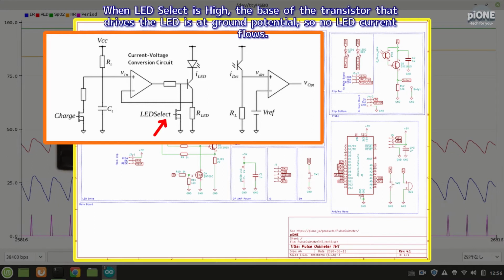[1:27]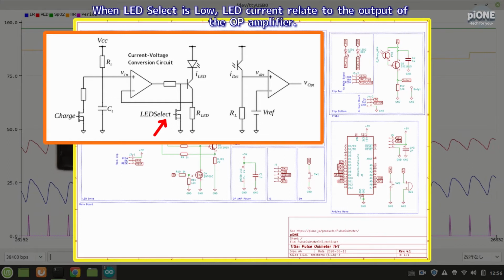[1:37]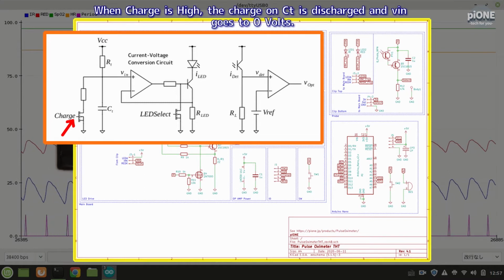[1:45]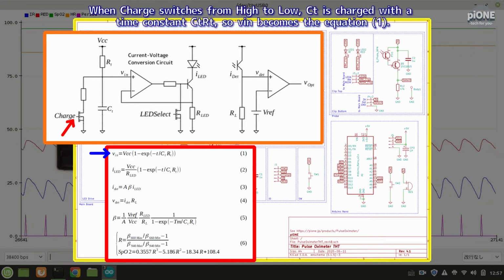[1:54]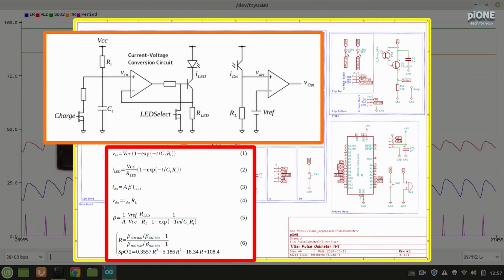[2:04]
It's a simplified circuit of the LED drive circuit and the light detecting circuit. When LED select is high, the base of the transistor that drives the LED is at ground potential, so no LED current flows. When LED select is low, LED current relates to the output of the op amplifier. When charge is high, the charge on CT is discharged and Vin goes to 0 volts. When charge switches from high to low, CT is charged with a time constant CTRT, so Vin becomes equation 1. Since this operational amplifier constitutes a voltage-current conversion circuit, LED current is given by equation 2.
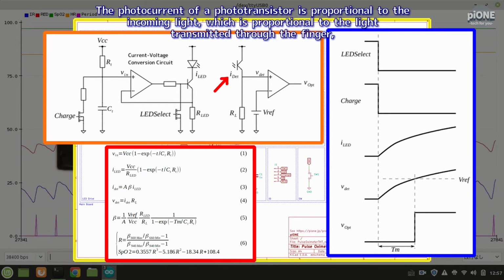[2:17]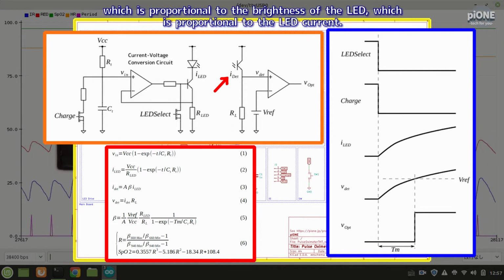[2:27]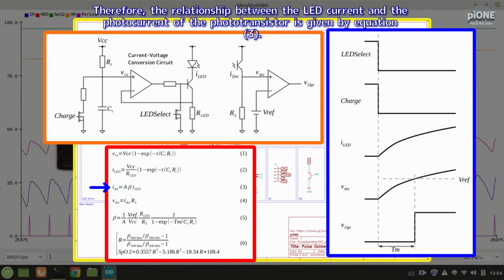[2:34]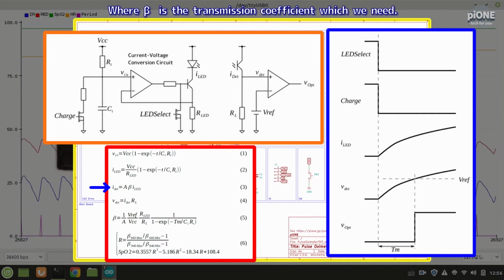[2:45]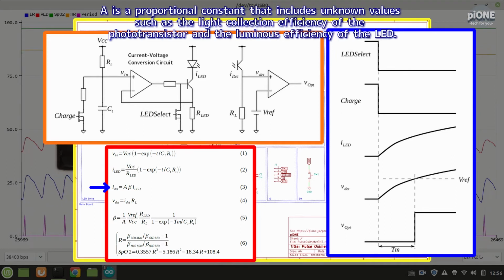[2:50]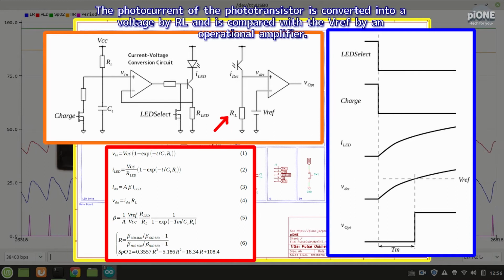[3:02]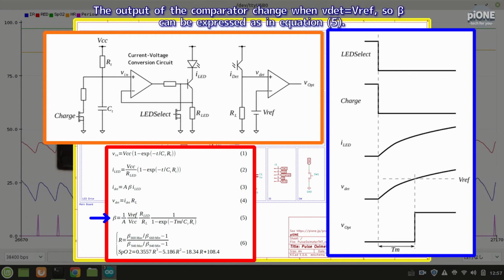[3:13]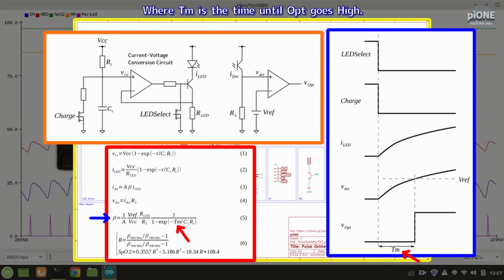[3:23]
The photocurrent of a phototransistor is proportional to the incoming light, which is proportional to the light transmitted through the finger, which is proportional to the brightness of the LED, which is proportional to the LED current. Therefore, the relationship between the LED current and the photocurrent of the phototransistor is given by equation 3, where beta is the transmission coefficient which we need. A is a proportional constant that includes unknown values such as the light collection efficiency of the phototransistor and the luminous efficiency of the LED. The photocurrent is converted into a voltage by RL and is compared with Vref by an operational amplifier. The output of the comparator changes when VDET equals Vref, so beta can be expressed as in equation 5, where Tm is the time until opt goes high.
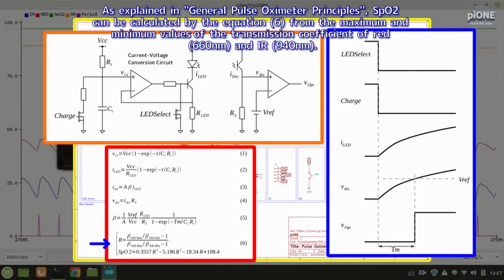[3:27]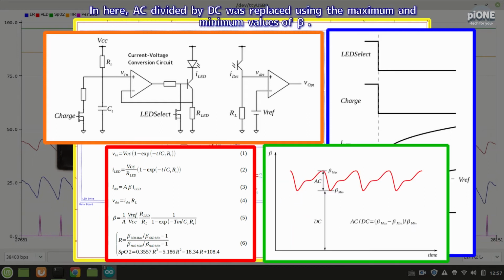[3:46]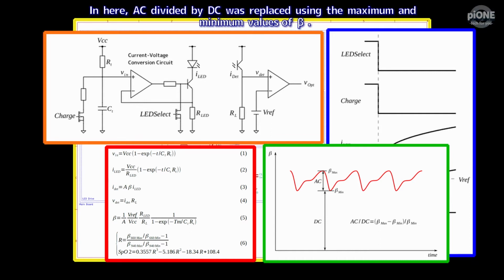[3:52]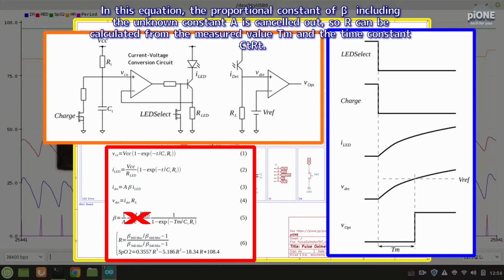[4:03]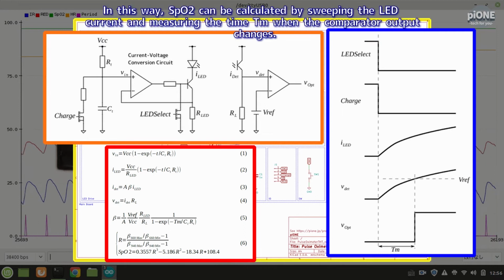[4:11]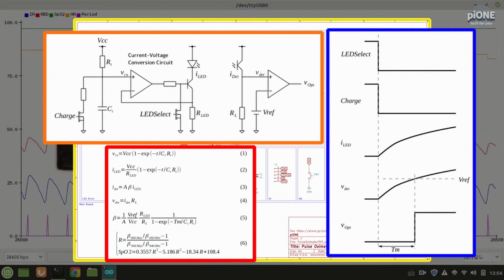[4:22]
As explained in general pulse oximeter principles, SpO2 can be calculated by equation 6 from the maximum and minimum values of the transmission coefficient of red, 660 nanometers, and IR, 940 nanometers. Here, AC divided by DC was replaced using the maximum and minimum values of beta. In this equation, the proportional constant of beta including the unknown constant A is cancelled out, so R can be calculated from the measured value Tm and the time constant CTRT. In this way, SpO2 can be calculated by sweeping the LED current and measuring the time Tm when the comparator output changes. Go back to the actual circuit.
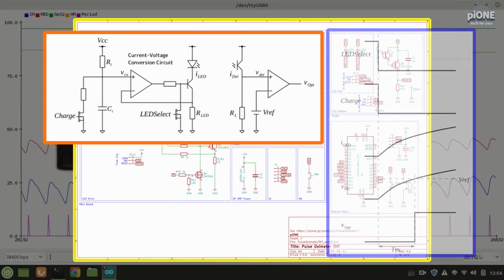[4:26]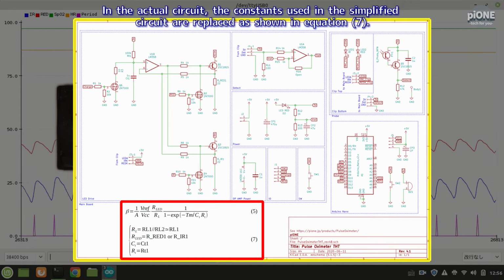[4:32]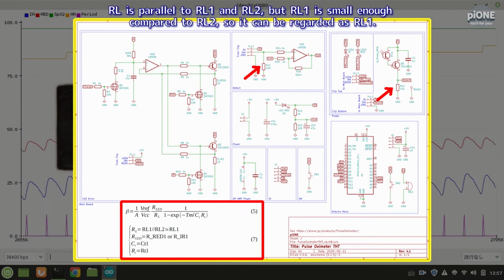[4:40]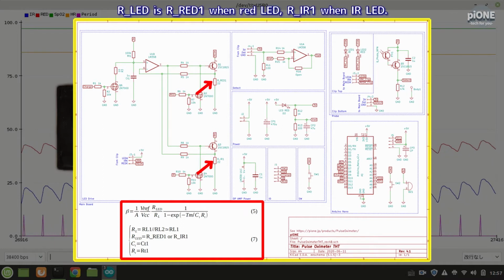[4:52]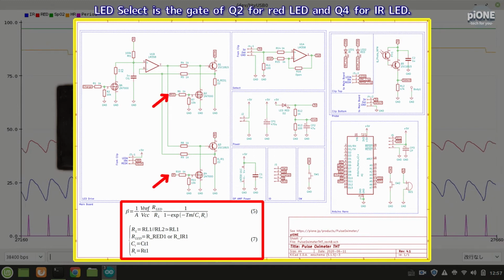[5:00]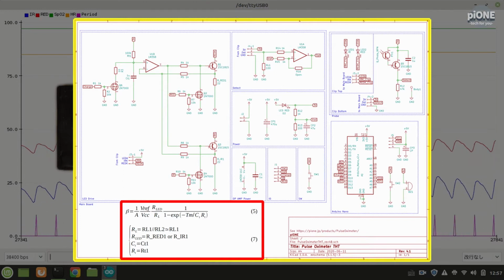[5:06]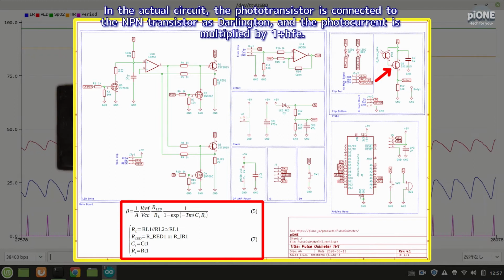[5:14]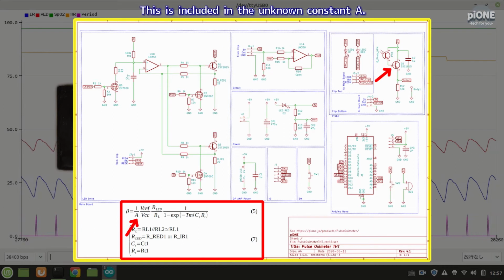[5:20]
In the actual circuit, the constants used in the simplified circuit are replaced as shown in equation 7. RL is RL1 and RL2 in parallel, but RL1 is small enough compared to RL2, so it can be regarded as RL1. RLED is RRed1 for the red LED and RIR1 for the IR LED. LED select is the gate of Q2 for the red LED and Q4 for the IR LED. In the actual circuit, the phototransistor is connected to an NPN transistor as a Darlington, and the photocurrent is multiplied by 1 plus hFE. This is included in the unknown constant A.
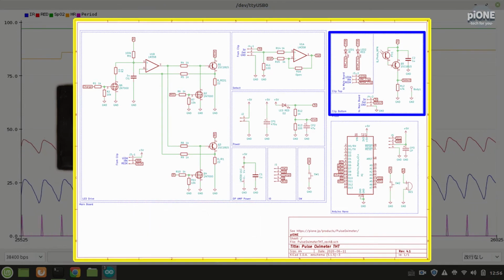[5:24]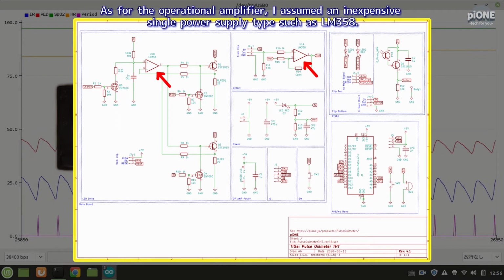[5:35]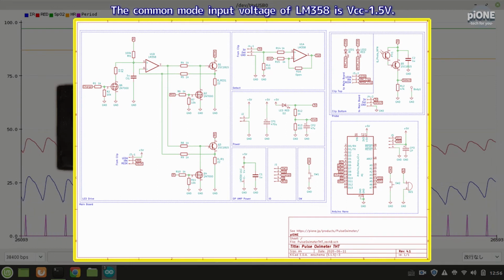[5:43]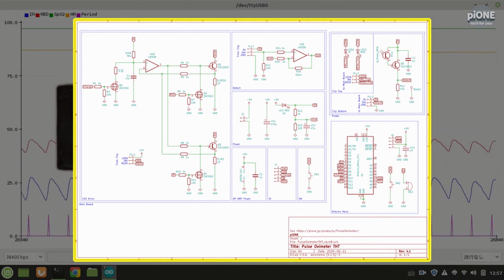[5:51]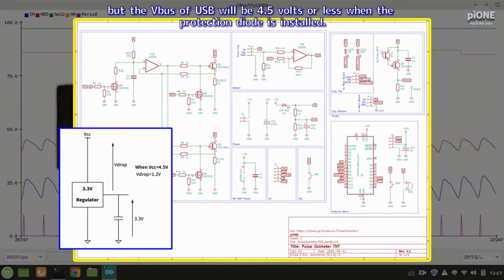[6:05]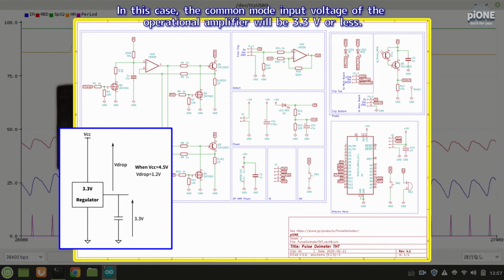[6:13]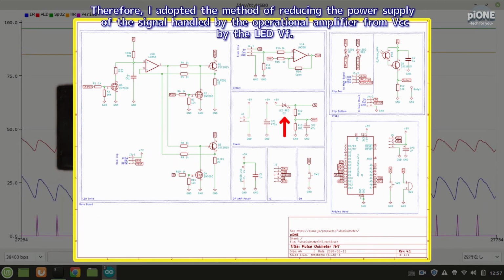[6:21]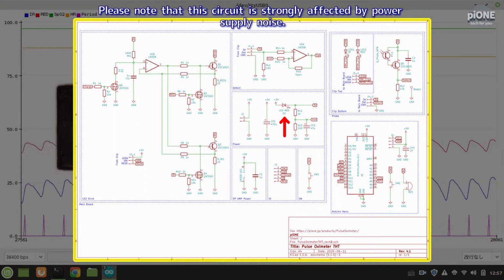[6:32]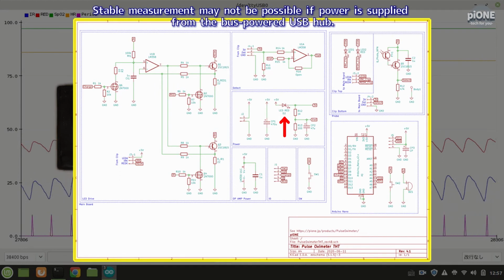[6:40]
To reduce noise, the amplifier part of the phototransistor is embedded in the probe. As for the operational amplifier, I assumed an inexpensive single power supply type such as the LM358. The common mode input voltage of the LM358 is VCC minus 1.5 volts. I thought that the power supply of the signal handled by the operational amplifier should be made by a highly available 3.3 volt regulator, but the VBUS of USB will be 4.5 volts or less when the protection diode is installed. In this case, the common mode input voltage of the operational amplifier will be 3.3 V or less. Therefore, I adopted the method of reducing the power supply of the signal handled by the operational amplifier from VCC by the LED VF. Please note that this circuit is strongly affected by power supply noise. Stable measurement may not be possible if power is supplied from a bus-powered USB hub.
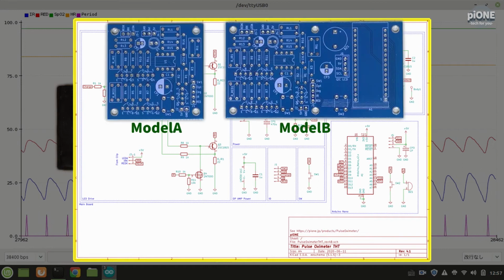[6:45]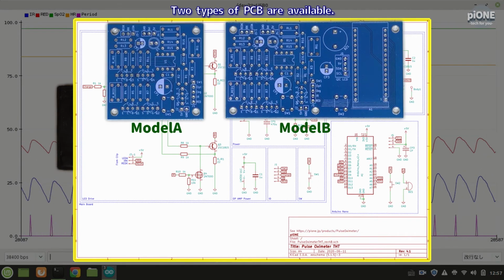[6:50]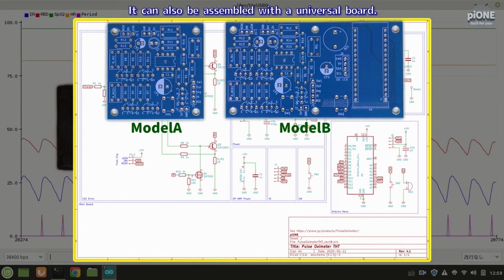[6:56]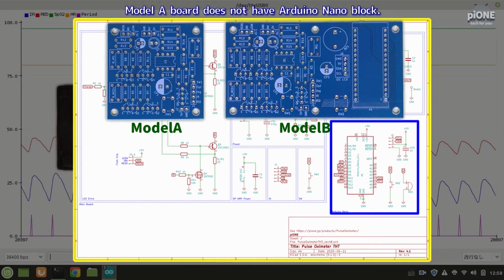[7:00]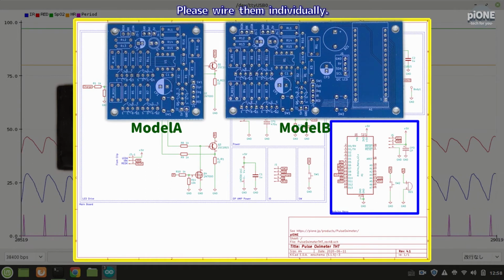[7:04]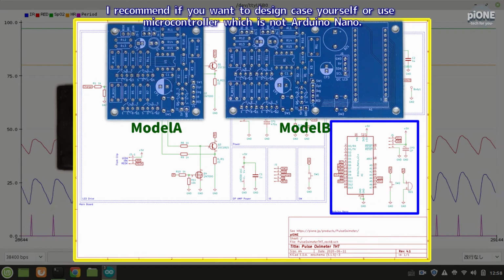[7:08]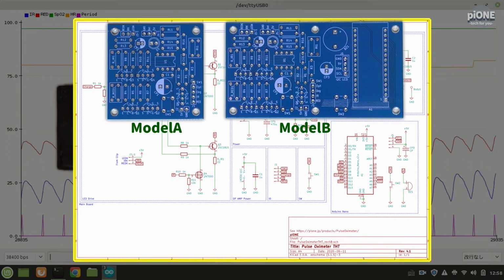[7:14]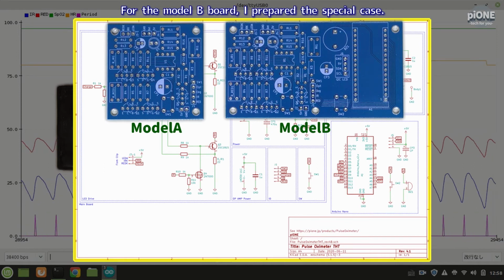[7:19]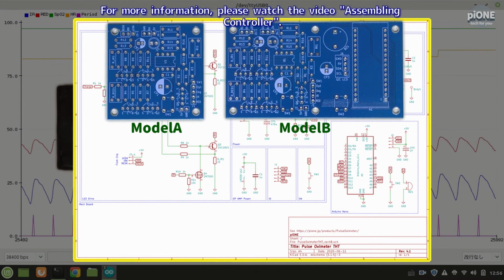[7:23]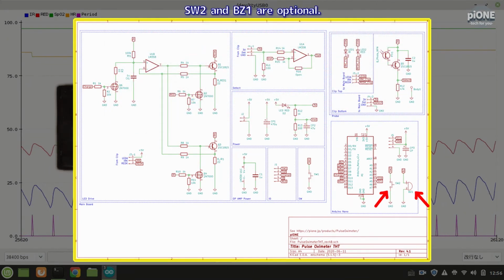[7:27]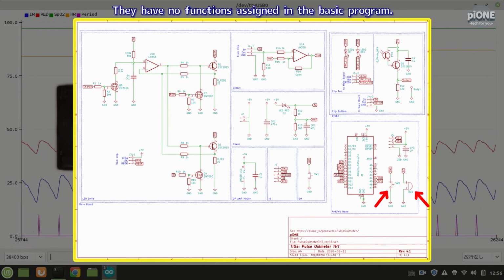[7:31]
Two types of PCB are available. PCB data can be downloaded from my web page. It can also be assembled with a universal board. The Model A board does not have the Arduino Nano block. Please wire them individually. I recommend it if you want to design the case yourself or use a microcontroller which is not an Arduino Nano. For the Model B board, I prepared a special case. For more information, please watch the video assembling controller. SW2 and BZ1 are optional. They have no functions assigned in the basic program.
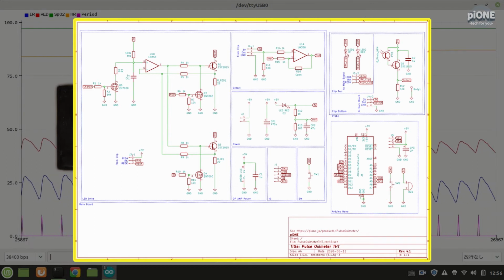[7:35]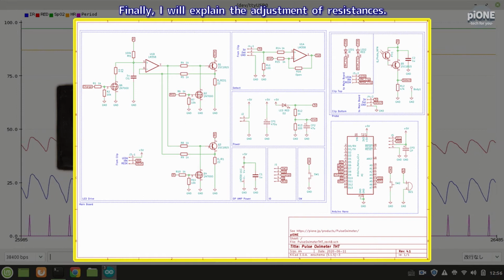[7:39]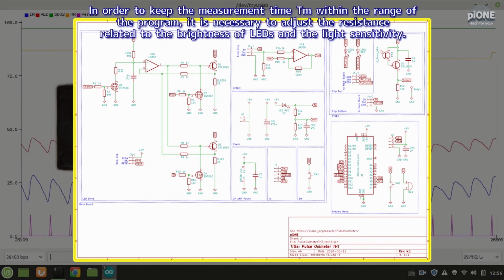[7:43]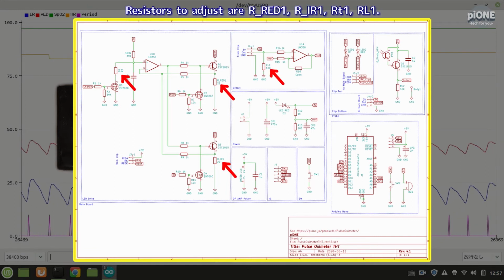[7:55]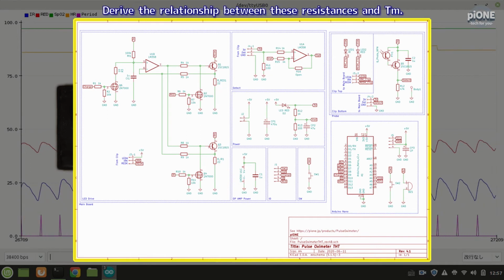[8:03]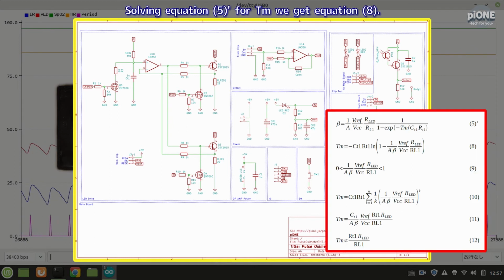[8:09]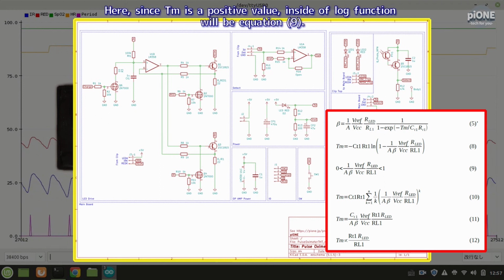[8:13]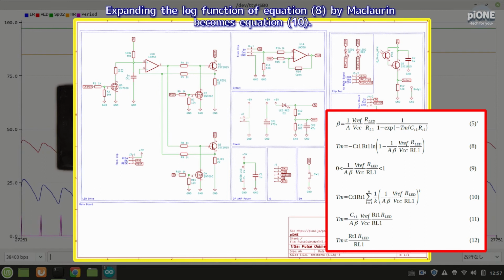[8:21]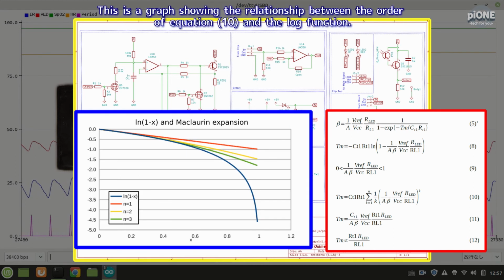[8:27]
Finally, I will explain the adjustment of resistances. In order to keep the measurement time TM within the range of the program, it is necessary to adjust the resistances related to the brightness of the LEDs and the light sensitivity. Resistors to adjust are RRED1, RIR1, RT1, RL1. Derive the relationship between these resistances and TM. Solving equation 5 for TM we get equation 8. Here, since TM is a positive value, the inside of the log function will be equation 9. Expanding the log function of equation 8 by Maclaurin becomes equation 10. This is a graph showing the relationship between the order of equation 10 and the log function.
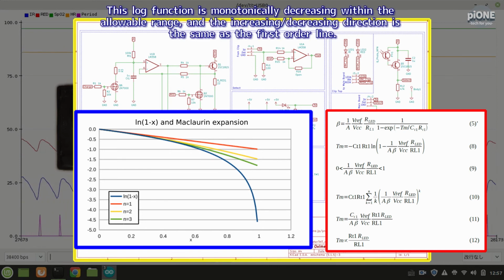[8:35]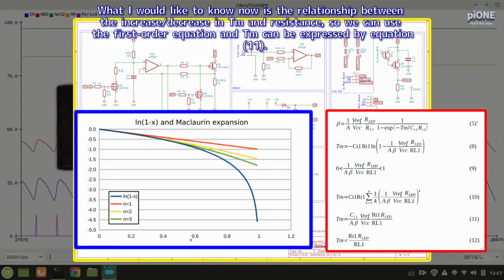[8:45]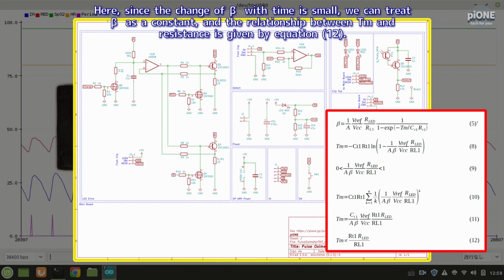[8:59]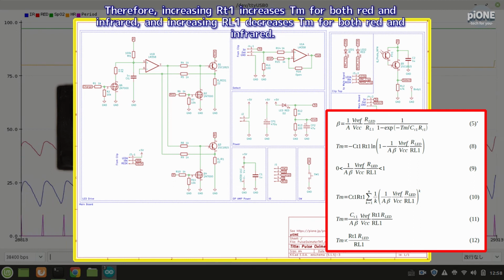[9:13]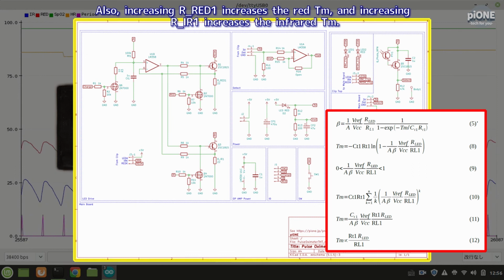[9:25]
This log function is monotonically decreasing within the allowable range, and the increasing-decreasing direction is the same as the first order line. What I would like to know now is the relationship between the increase-decrease in TM and resistance, so we can use the first order equation and TM can be expressed by equation 11. Here, since the change of beta with time is small, we can treat beta as a constant, and the relationship between TM and resistance is given by equation 12. Therefore, increasing RT1 increases TM for both red and infrared, and increasing RL1 decreases TM for both red and infrared. Also, increasing RRED1 increases the red TM, and increasing RIR1 increases the infrared TM.
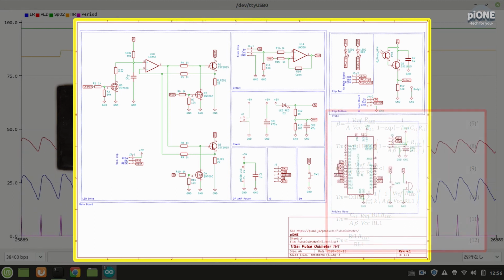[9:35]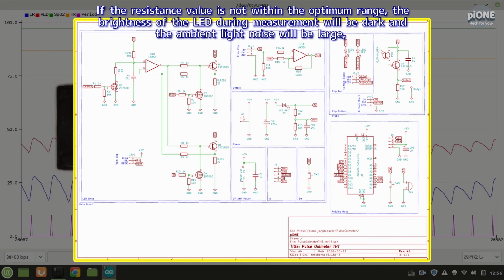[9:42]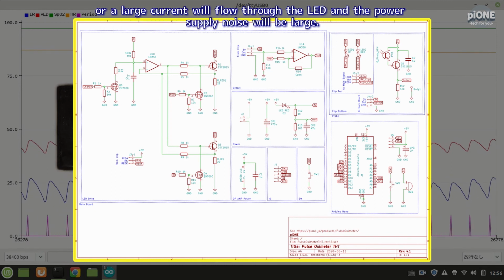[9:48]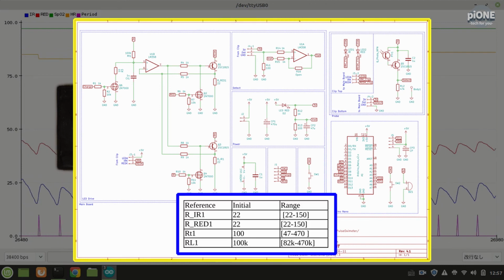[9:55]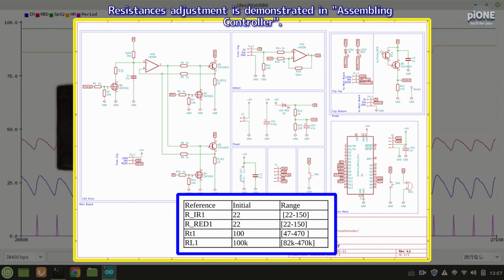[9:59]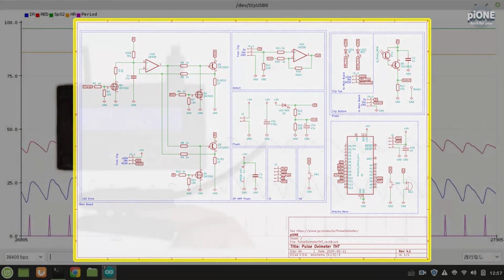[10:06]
If the resistance value is not within the optimum range, the brightness of the LED during measurement will be dark and the ambient light noise will be large, or a large current will flow through the LED and the power supply noise will be large. Here are the initial values and adjustment ranges of them. Resistance adjustment is demonstrated in assembling controller.
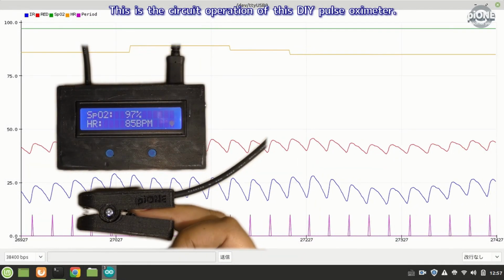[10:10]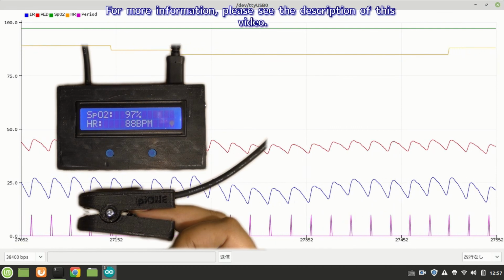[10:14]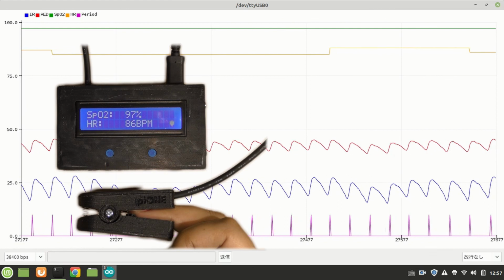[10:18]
This is the circuit operation of this DIY pulse oximeter. For more information, please see the description of this video.